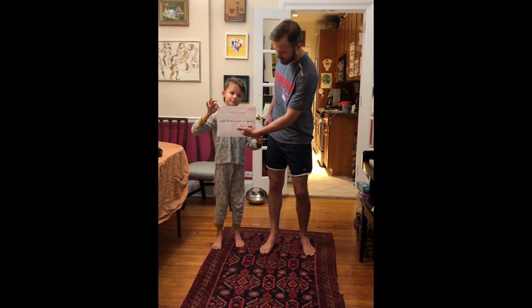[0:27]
Today we're going to show you how you can join the fight to end the coronavirus epidemic. All over our country, doctors, nurses, and first responders like firefighters, EMS, and police are short on some of the things they need to keep themselves safe. So in this video, we're going to show you how you can make an isolation gown.
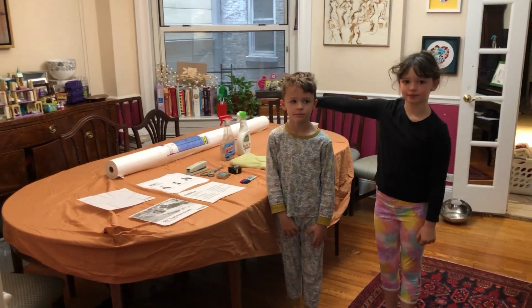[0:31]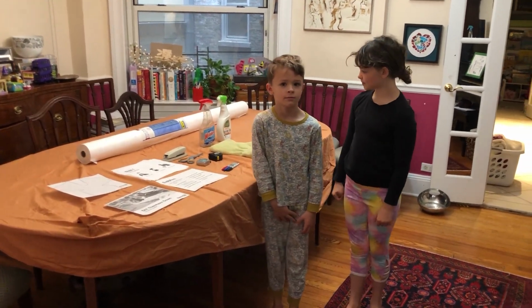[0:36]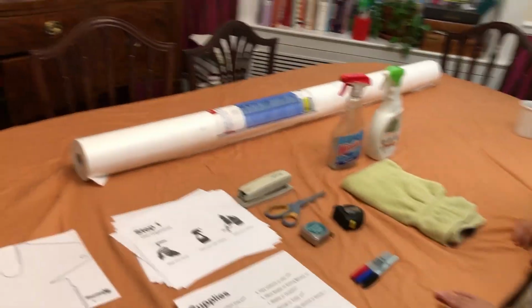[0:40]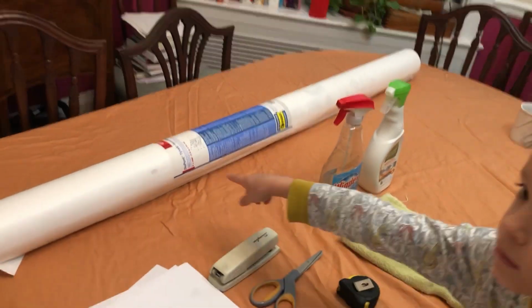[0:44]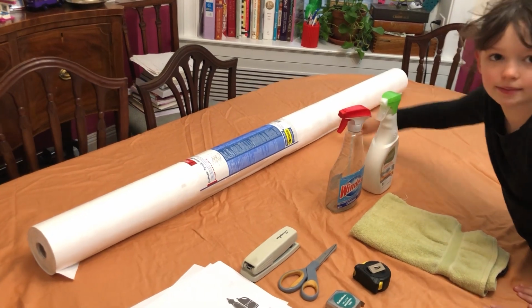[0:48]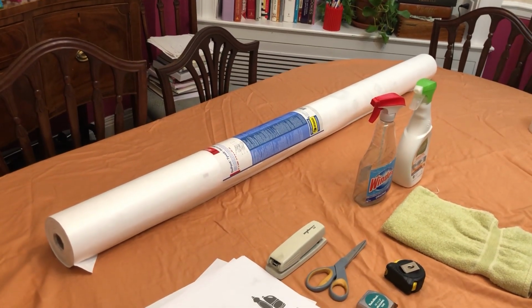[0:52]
Now, where you go to find the instructions on how to do that is a website called thermaxxjackets.com/products. All right, after you go to the website to find the instructions, you're going to need to start gathering your materials. Everything that you see here is a normal household item except for this big roll of paper. This is Tyvek paper, but we were able to order this on Amazon and have it delivered. You could also go to a home improvement store and they will probably have it as well.
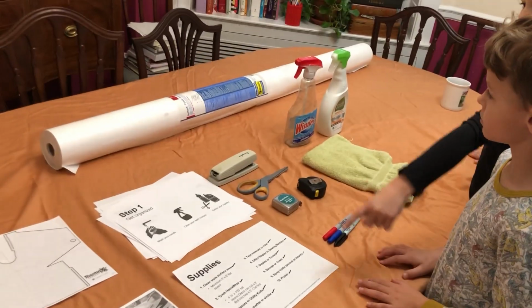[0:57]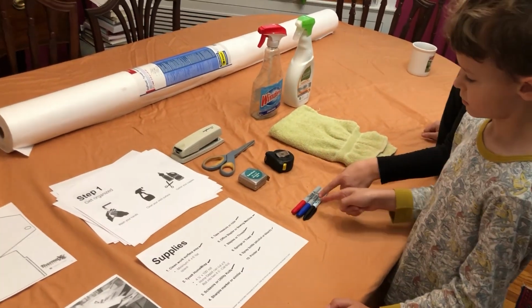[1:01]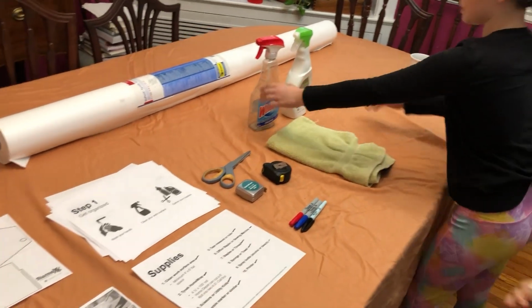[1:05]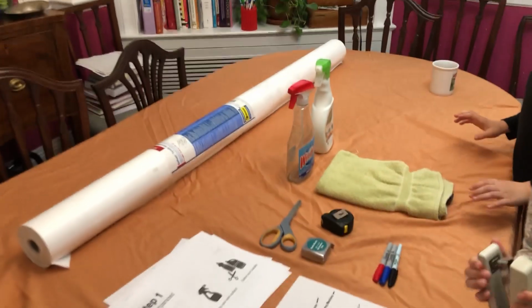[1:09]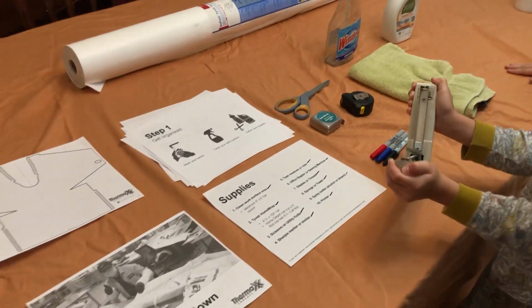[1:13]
You need a clean working surface. You need the Tyvek home wrap. You need the scissors, Sharpies, pens, tape measures, staples, a towel or a sponge, a spray bottle with disinfecting solution, preferably bleach or alcohol, obviously a printer to print all this out. Okay. So step one, once you've gathered your materials, is to wash your hands.
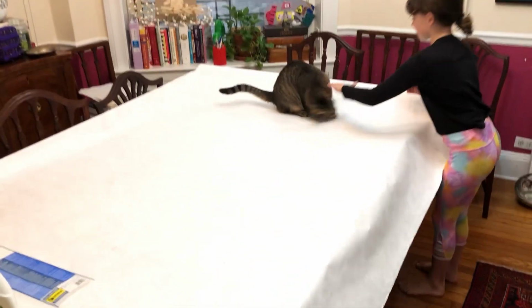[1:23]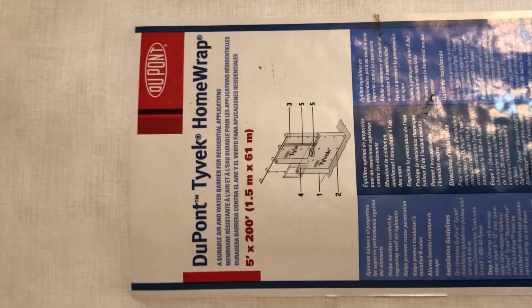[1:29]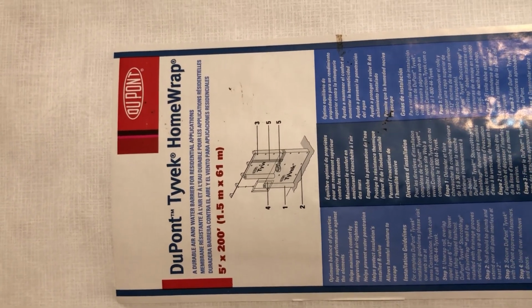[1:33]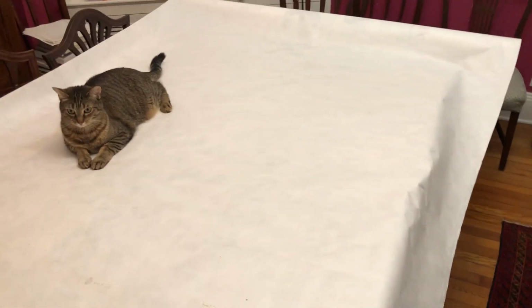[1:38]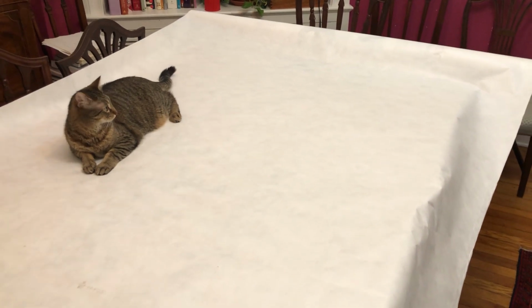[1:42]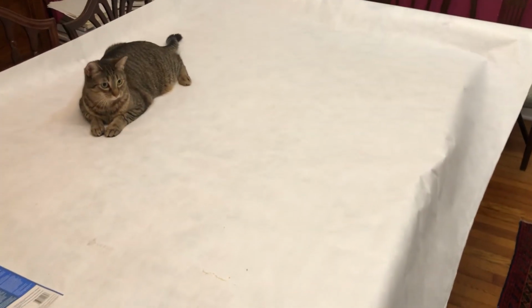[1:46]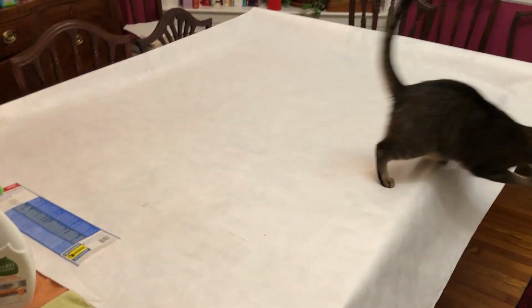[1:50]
Now we've rolled out our Tyvek paper, and of course the cat wants to help. But I just want to show you the specifics of the product we're using here for when you go to order it or pick it up at your store. So you're going to lay it out here, and the first thing we're going to do is cut out a template, which you're going to use to cut out all the other ones afterwards. And this is the most complicated step and the longest step.
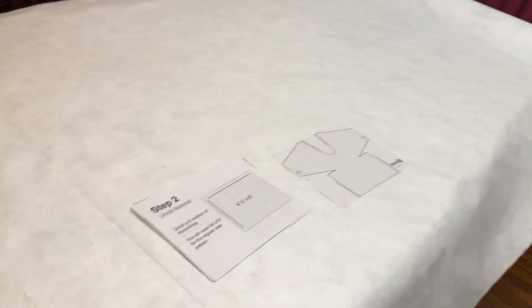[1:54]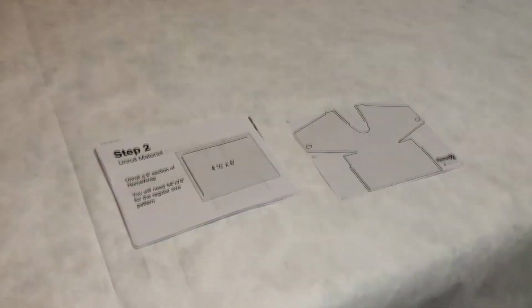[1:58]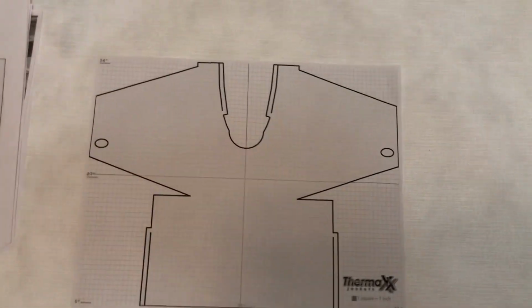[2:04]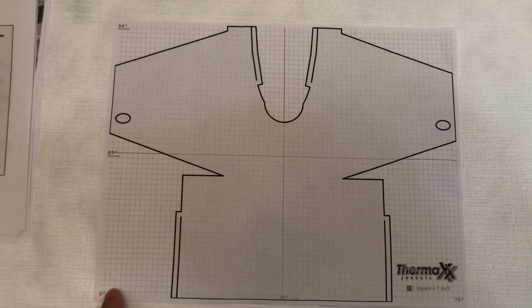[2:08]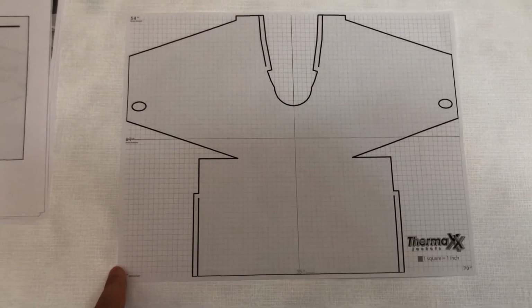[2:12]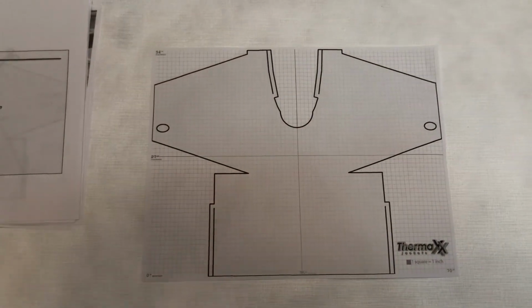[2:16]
All right, so you're going to need to roll out a sheet that is at least 4.5 feet tall with a length of 6 feet. And then you're going to start to mark up the paper according to this document right here. Every square on here is an inch. And start marking out the important parts, the important measurements of where the corners are so that it'll be easy to cut it out. You'll see as we go.
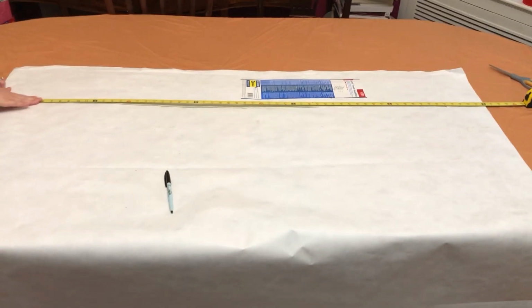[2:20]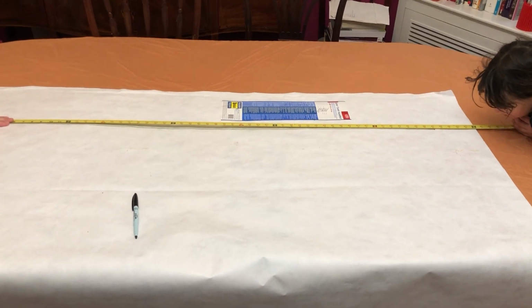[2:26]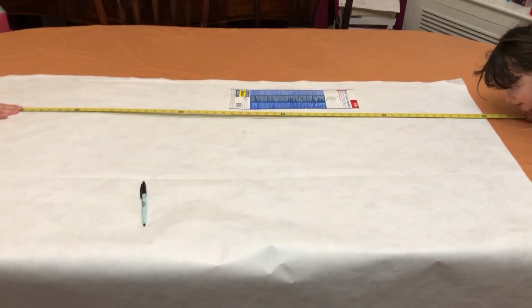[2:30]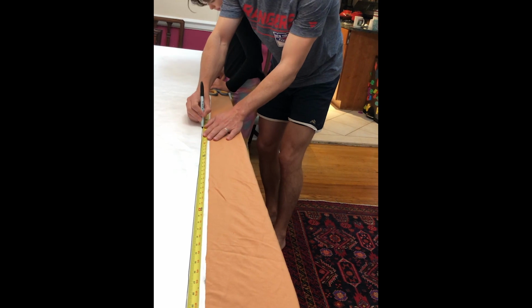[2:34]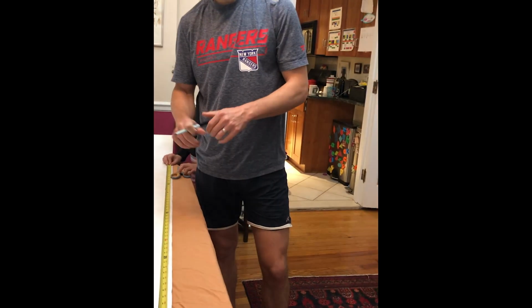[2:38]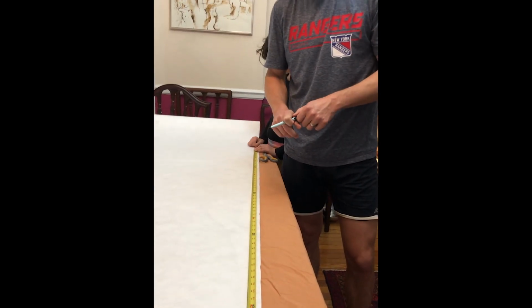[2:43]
Okay, so right now we're measuring the width out, which we've marked with a big line from inches 1 to 54. And then we're going to do the length next. All right, so now we're measuring the length of it. We're going out 6 feet. Now we're going to start marking up the important inches that correspond to the corners of the gown.
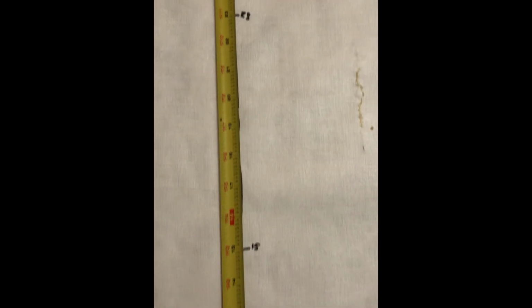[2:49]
All right, so along the width, I have marked the following measurements: 15 inches, 23 inches, 31, 34. This right here is the thumb hole, 41, 42, which is where the collar comes down to, 45, and 53. And these will become important as we start to draw the template because these represent all the different corners. Now we're going to mark up the length.
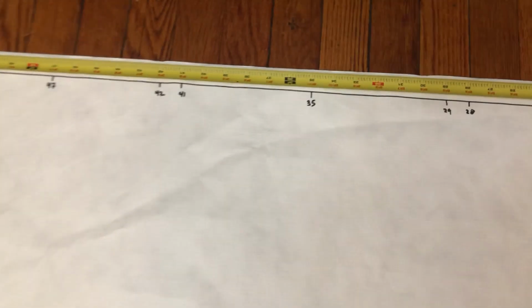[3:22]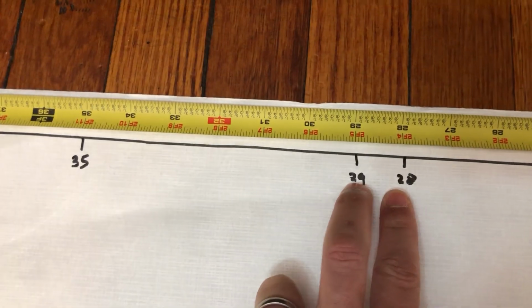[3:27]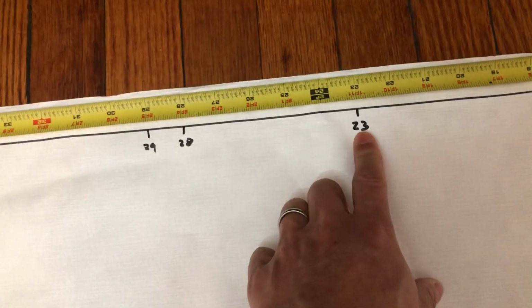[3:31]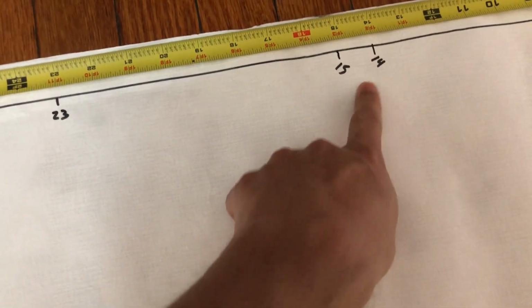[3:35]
All right, so here now we've marked out the length and the important measurements. 35 would be half of the gown. And then this is where the straps along the collar are on either side. And this is where the sleeve begins and where it ends. And where the bottom of the apron, where the straps are going to be.
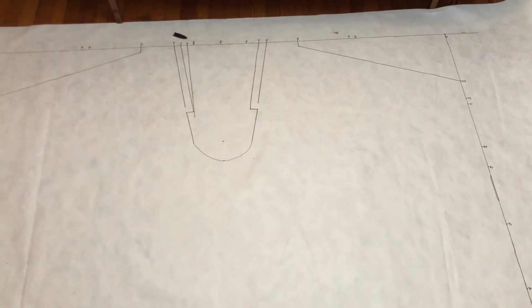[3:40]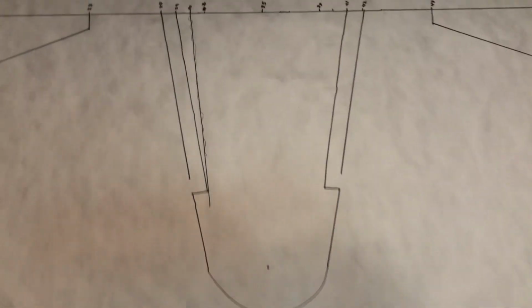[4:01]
So I just want to show you that we ended up marking up all 4 corners. We ended up measuring out the important distances. Now, one way you could do this if you wanted is you could only measure out half of it, fold it in half, and copy on the other side. We're going to do it this way. You can see that we have the collar drawn out. Here are all the important measurements for the collar.
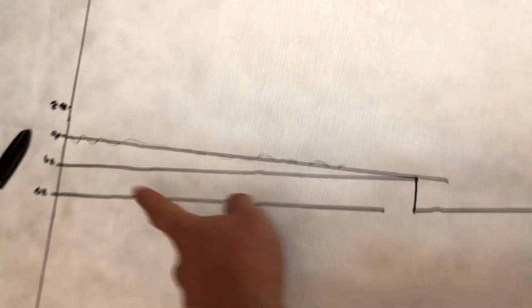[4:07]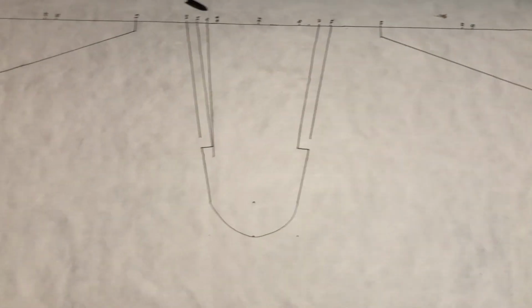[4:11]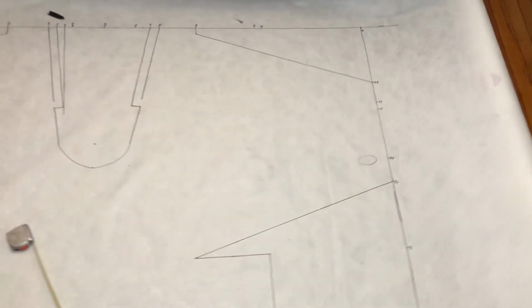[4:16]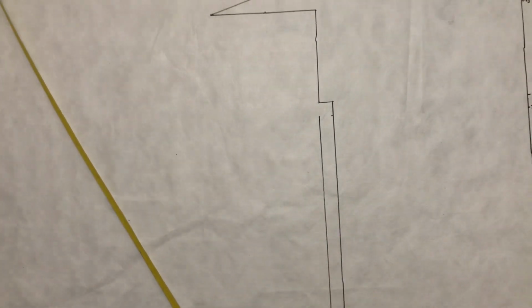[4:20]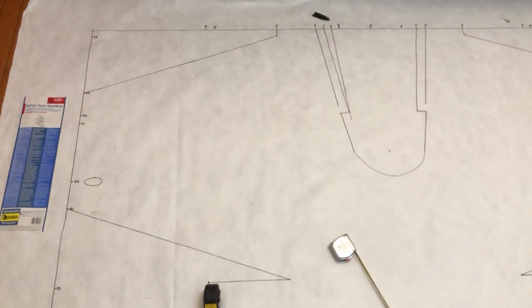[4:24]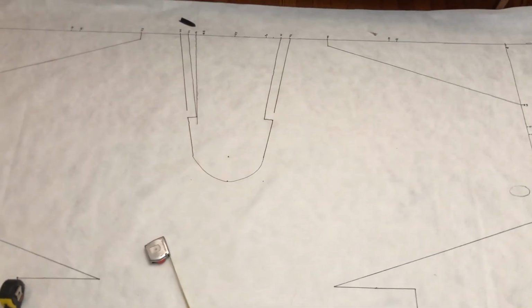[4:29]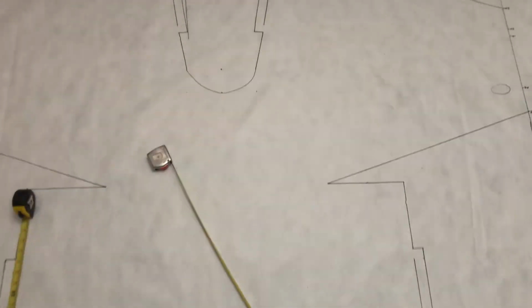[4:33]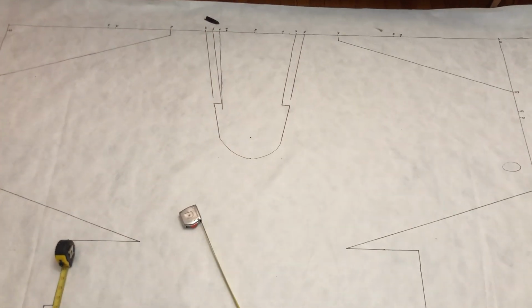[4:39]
And then here's the back and top of the apron, also with straps. So I think we're gonna cut half of it and fold it over to see if we've done it symmetrically. And then we'll cut the other half. And we'll go from there. And all we need is scissors for this part.
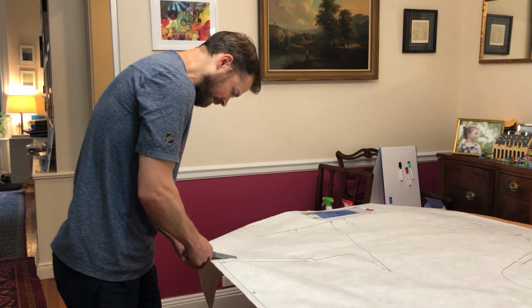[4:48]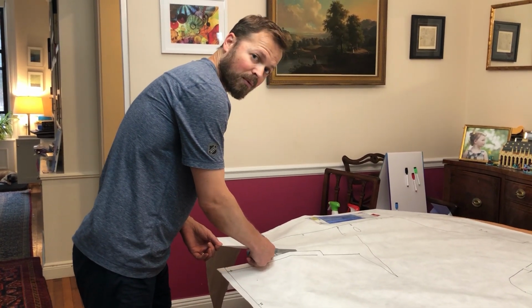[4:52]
Now we're gonna start cutting out the template. Cutting right along the line. It looks like it's cutting really smoothly. It actually cuts just like wrapping paper does.
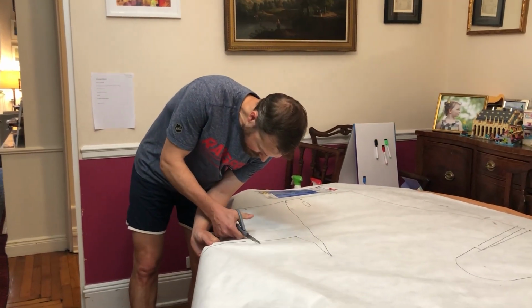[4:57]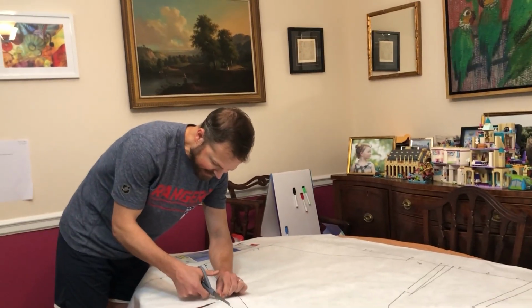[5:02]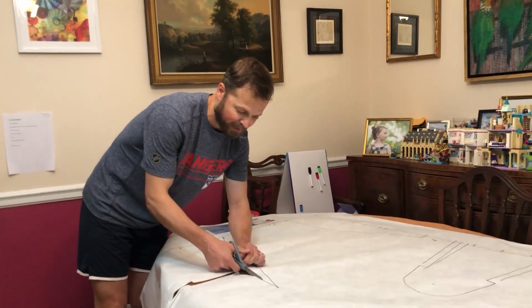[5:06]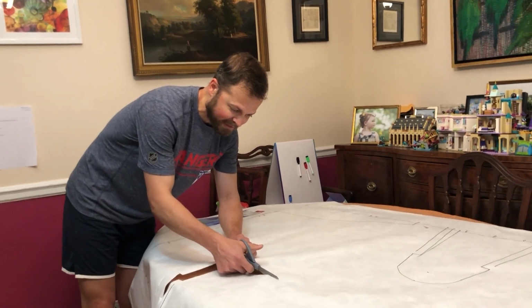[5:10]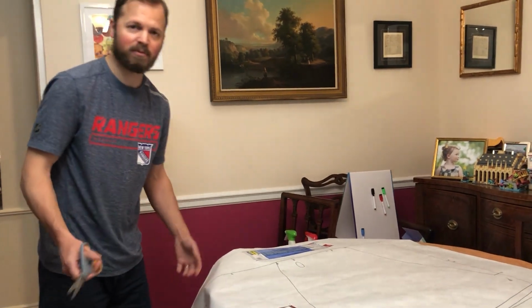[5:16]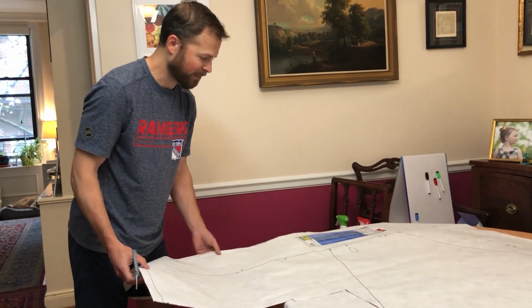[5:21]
Now, if I accidentally cut over the margin, we're just gonna tape it. This is still just a template, and so all we need is really a working outline to be correct, and the proportions to be correct. It doesn't have to be pretty, so I'm not too worried about that part at this point.
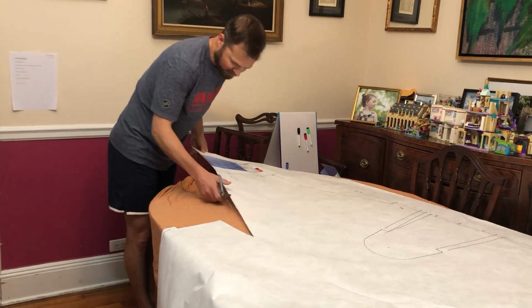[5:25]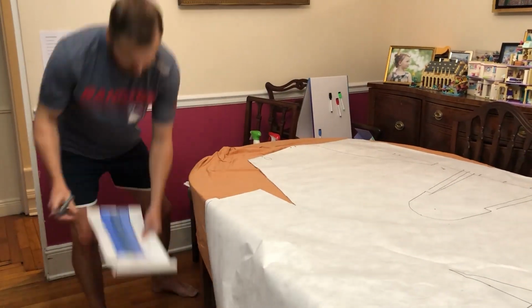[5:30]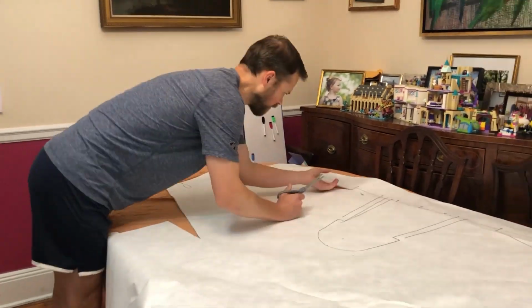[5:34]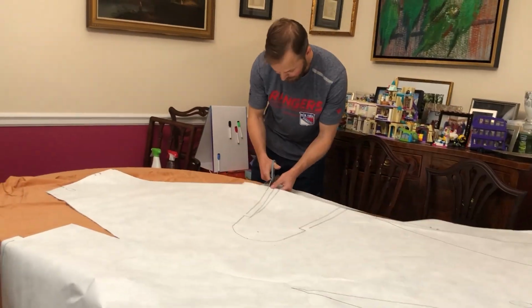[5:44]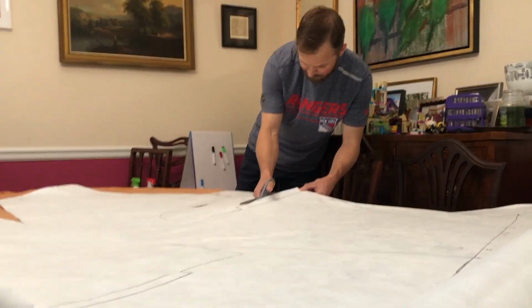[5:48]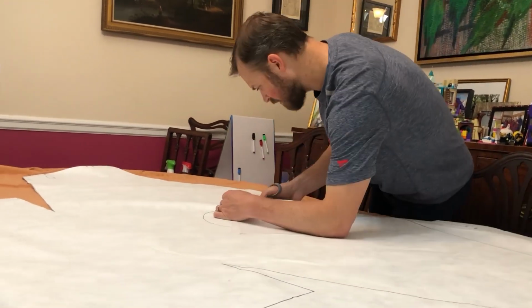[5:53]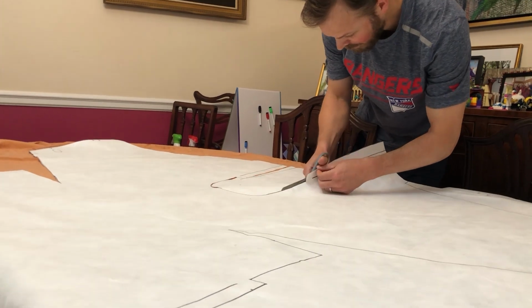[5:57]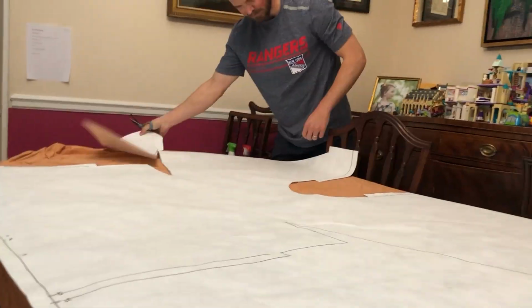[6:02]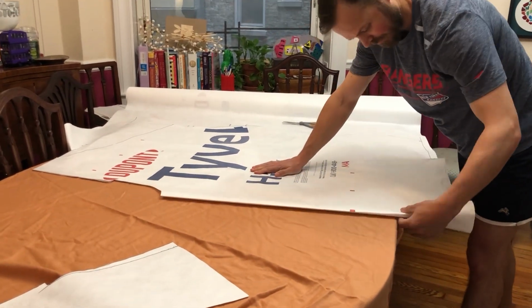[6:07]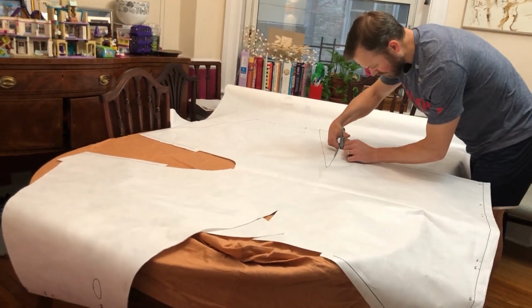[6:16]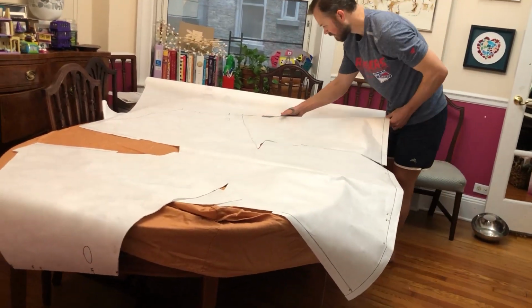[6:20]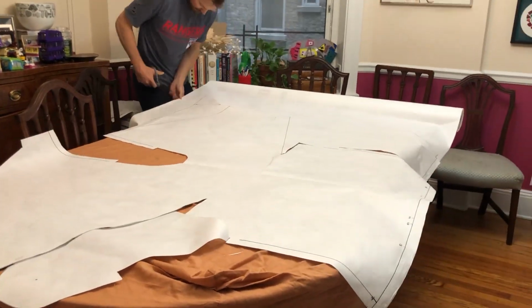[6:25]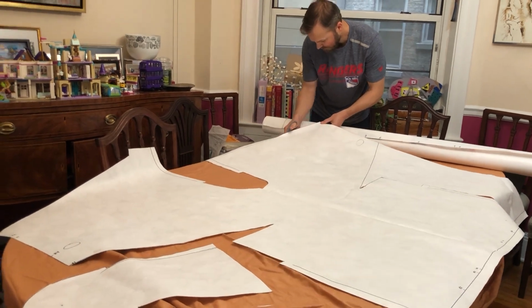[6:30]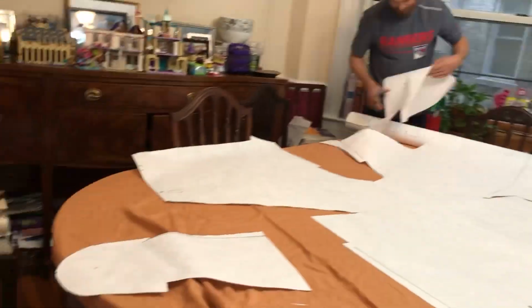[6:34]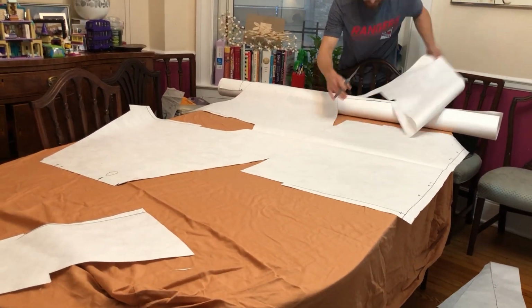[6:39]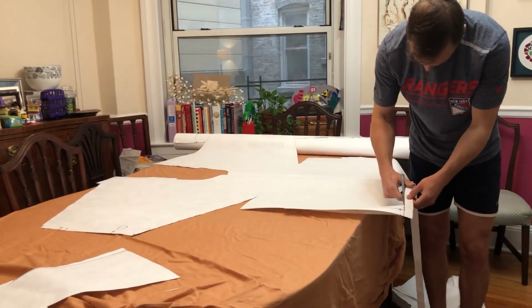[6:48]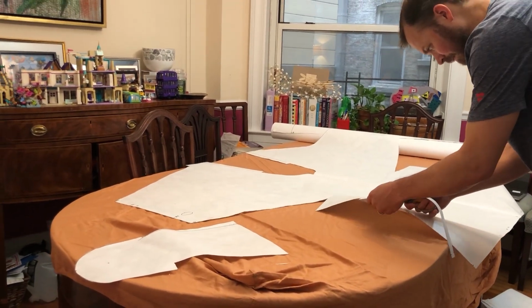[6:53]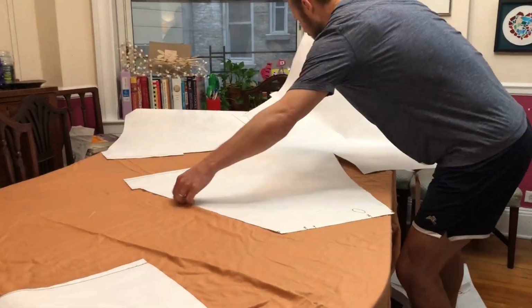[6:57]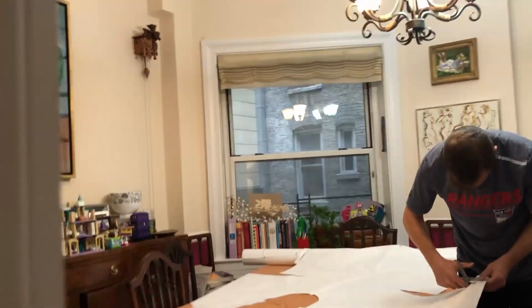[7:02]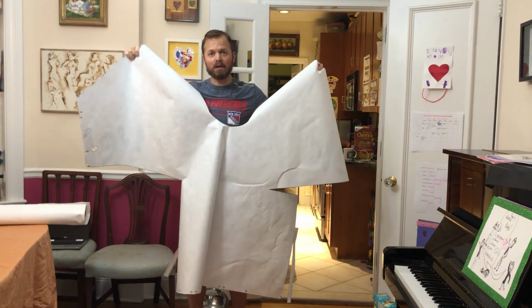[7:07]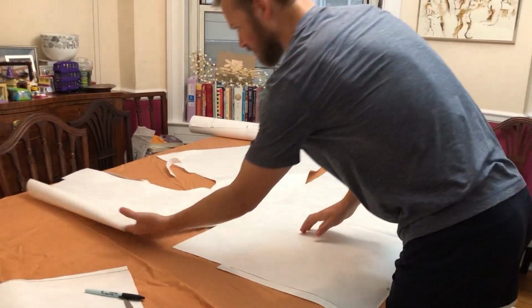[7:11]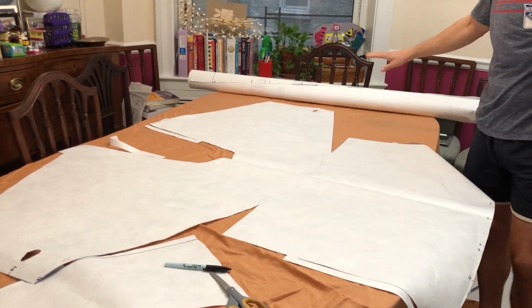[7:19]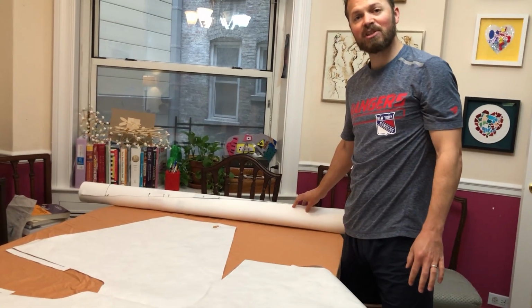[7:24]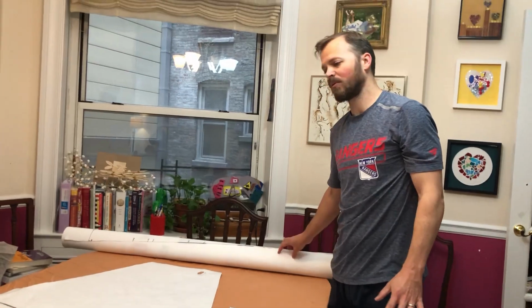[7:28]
So this is what the template should look like. These are the straps. This is the neck, thumb holes. So now we're gonna lay this down over this paper and we're gonna trace it out. This next one will be the one that we actually cut out and staple. So this will be a real one. This is just the template.
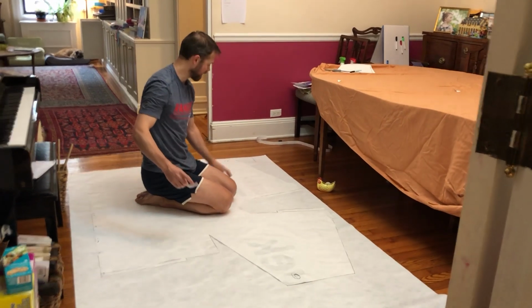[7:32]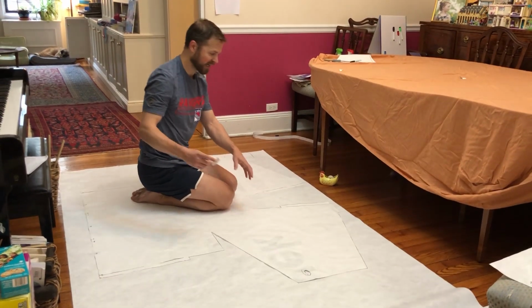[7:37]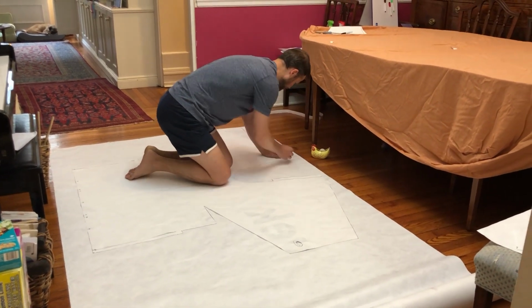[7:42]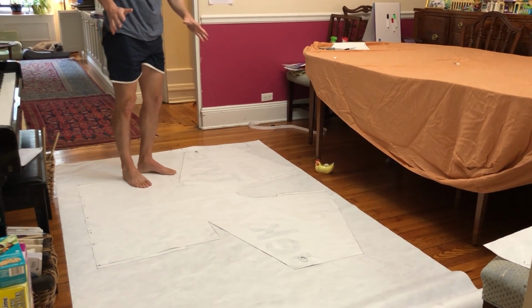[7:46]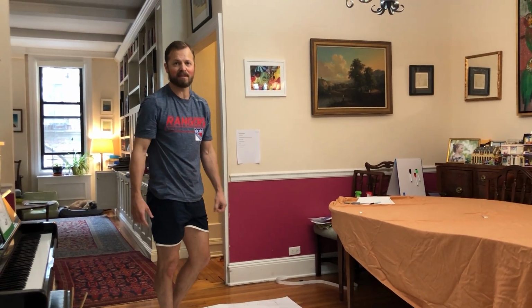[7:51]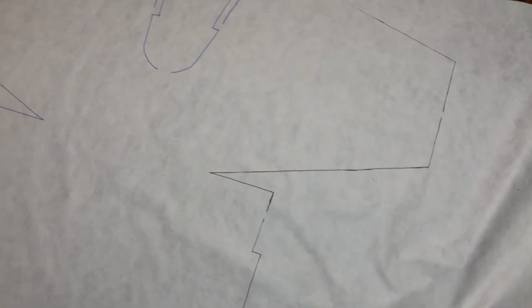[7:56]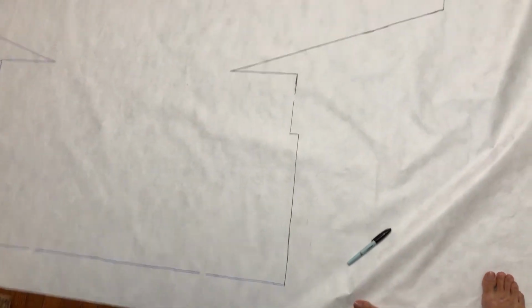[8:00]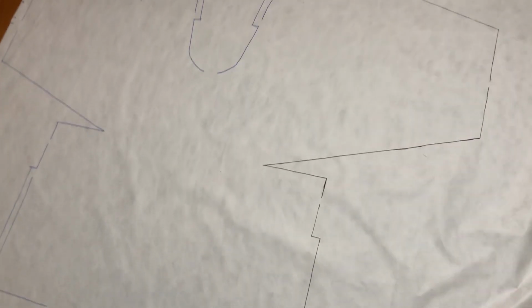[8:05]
Okay, so we've now laid the template down on top of the Thermaxx paper, and we've decided to tape it down just so that it doesn't shift while we're tracing it. So we're gonna trace the outline of this, cut it out, and then staple it together, and then disinfect it, and this will be our first real gown. Okay, so this is our first trace of the template, and it went pretty smoothly and pretty quickly. So now we're gonna cut this out and then start the stapling.
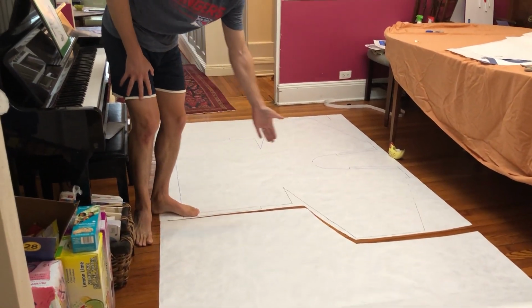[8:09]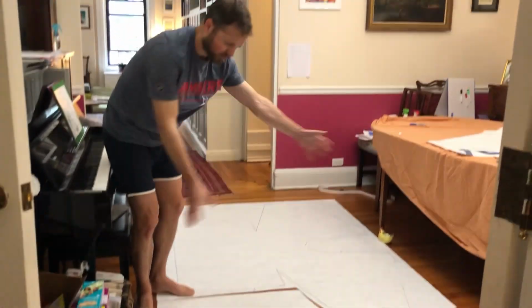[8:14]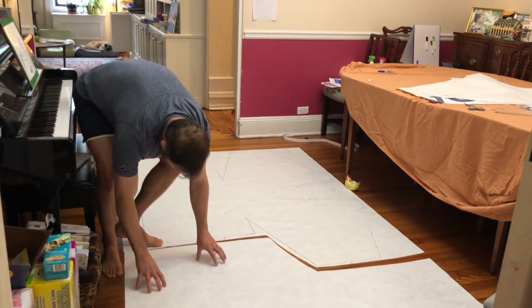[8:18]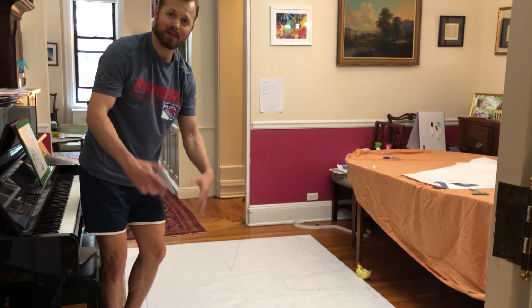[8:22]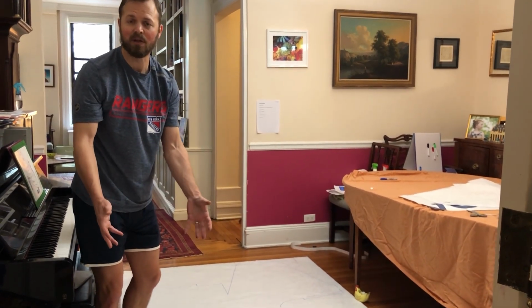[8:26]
To preserve paper, I cut it really close to the edge and then along the sleeve, because for the next one we're gonna flip it and this will be the top of it, and so we can save a foot or so of paper, which might end up allowing us to make one extra gown or two extra gowns when we get to the end of the roll.
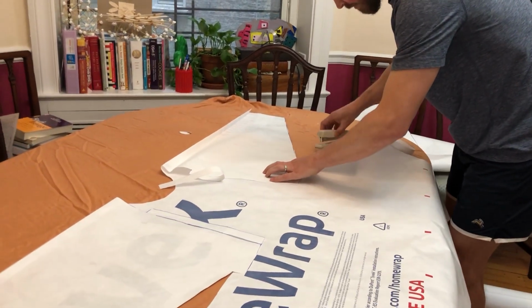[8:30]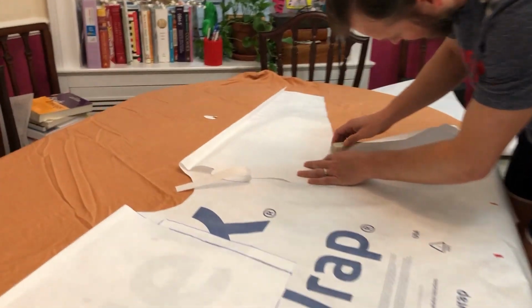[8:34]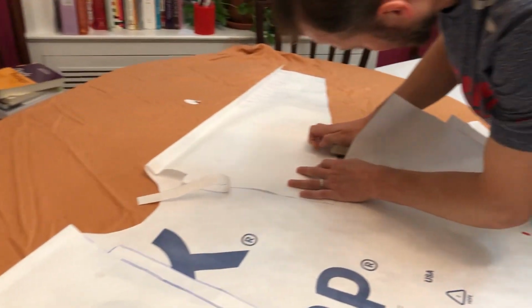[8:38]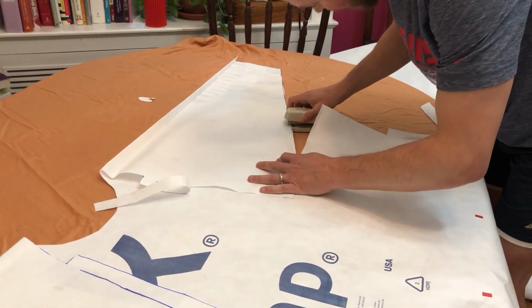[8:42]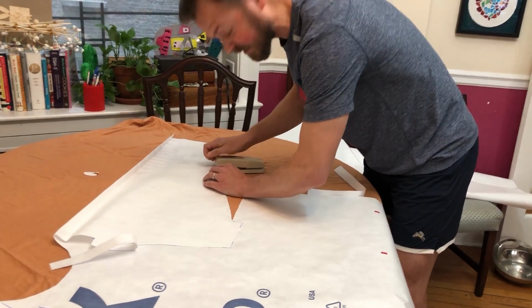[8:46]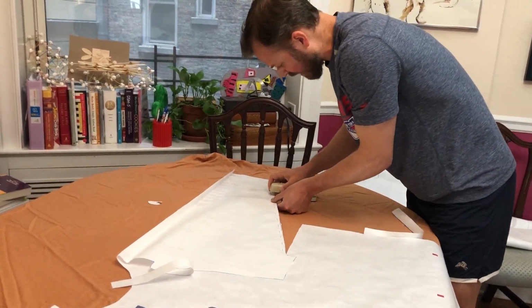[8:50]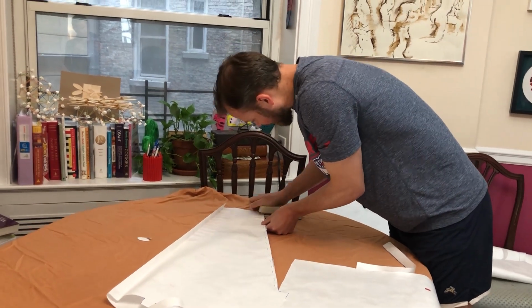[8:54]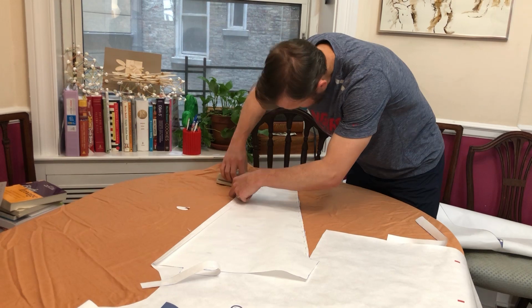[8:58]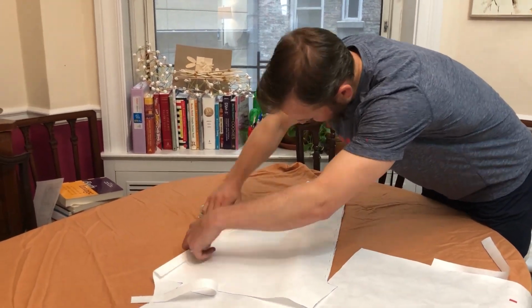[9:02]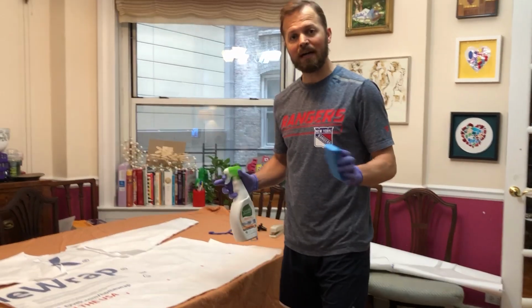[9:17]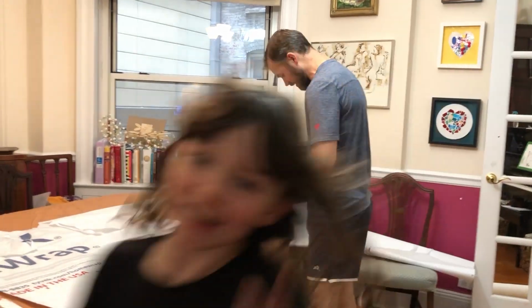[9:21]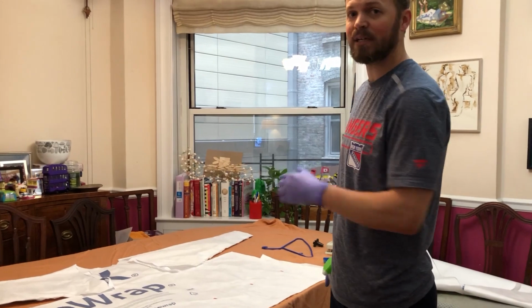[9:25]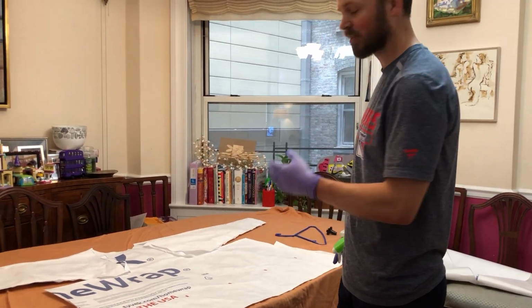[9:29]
Okay, so we repeated the stapling that we did on the other side, and now we're gonna get to the point where we are gonna disinfect. All right, so now we're gonna get to the disinfectant part, and I'm using a disinfectant spray that we have here. I'm wearing gloves. Wash your hands, but since we're getting to the sterilization part, I don't really wanna touch this anymore, and I want it to be as clean as possible.
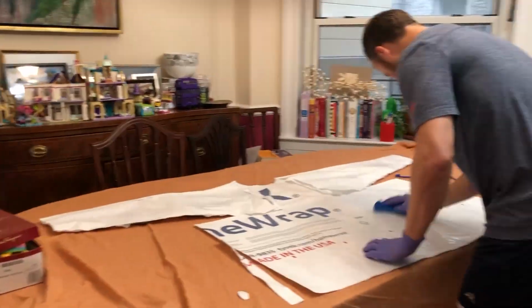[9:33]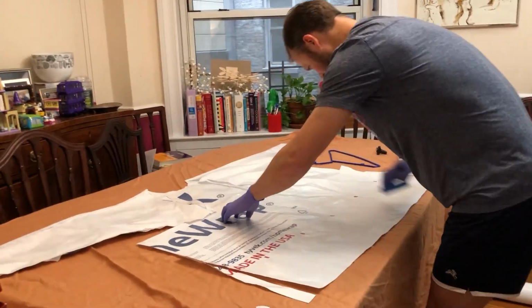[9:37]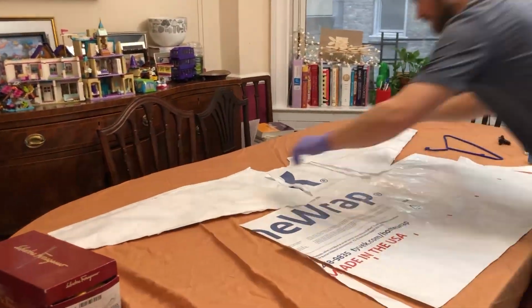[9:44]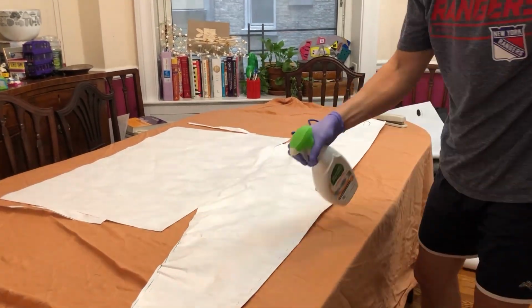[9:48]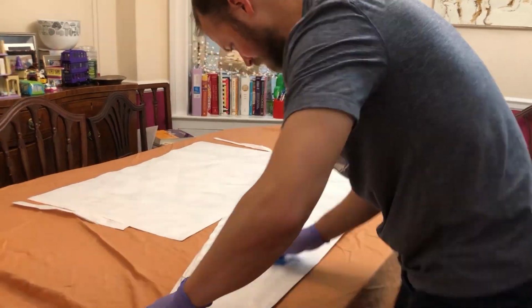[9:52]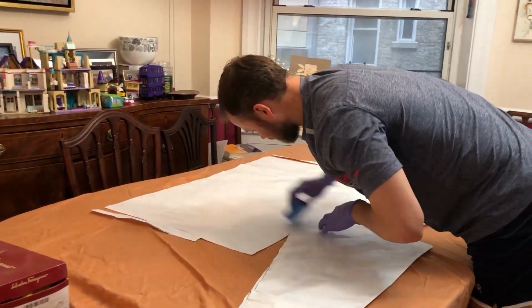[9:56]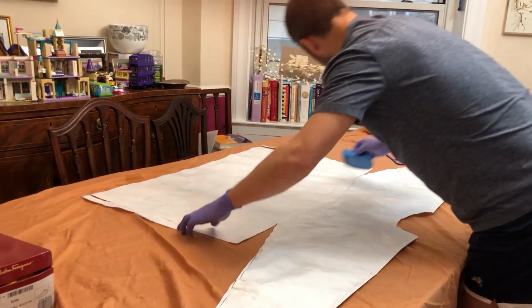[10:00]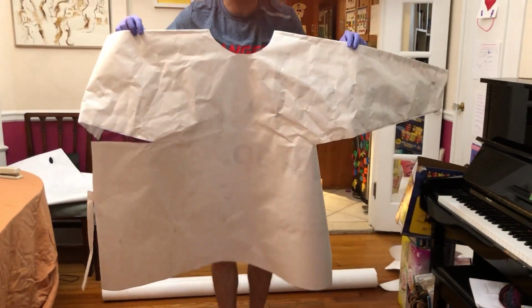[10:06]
The whole garment is disinfected now and ready to dry. This is what the final product should look like.
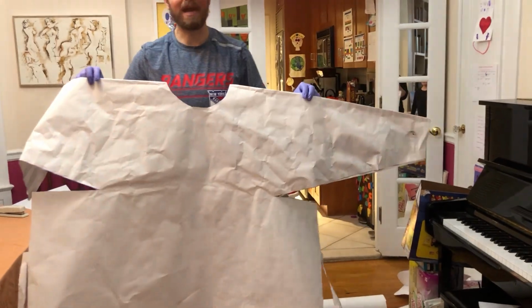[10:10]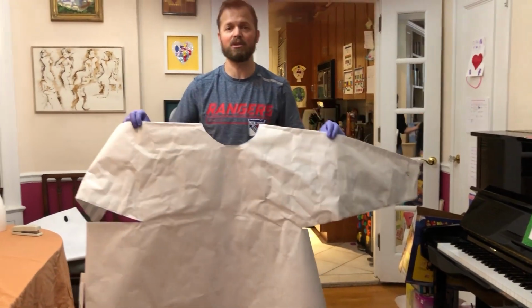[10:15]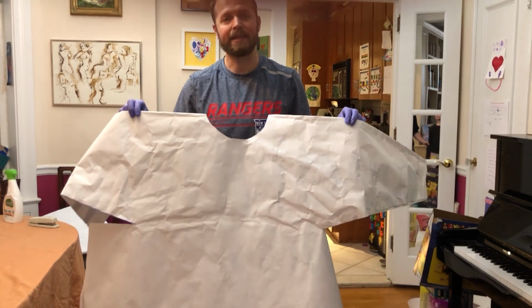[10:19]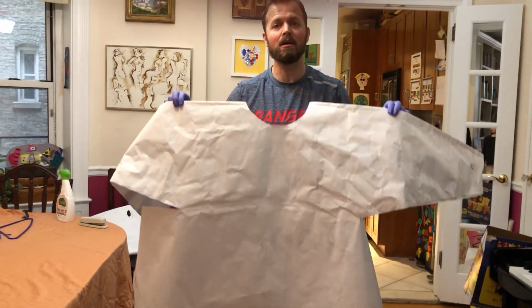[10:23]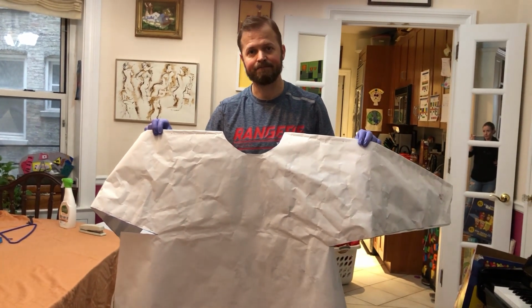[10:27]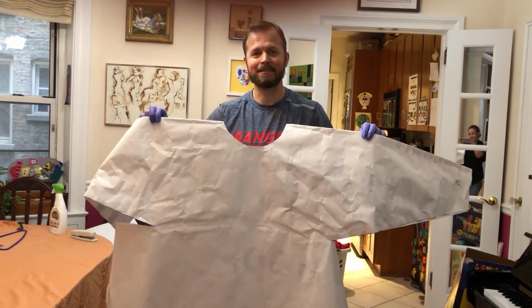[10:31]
And once you make 5 or 10 of these and you're looking for who to give them to, we suggest 2 things. One is you can go to the Thermaxx website and contact someone there who will help you find who will need these, or we suggest going to your local fire station and asking them. So good luck, you can do this, join the fight.